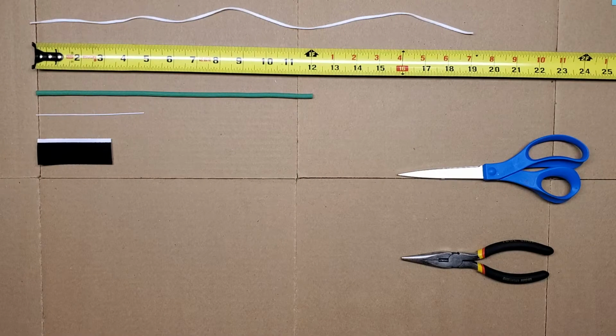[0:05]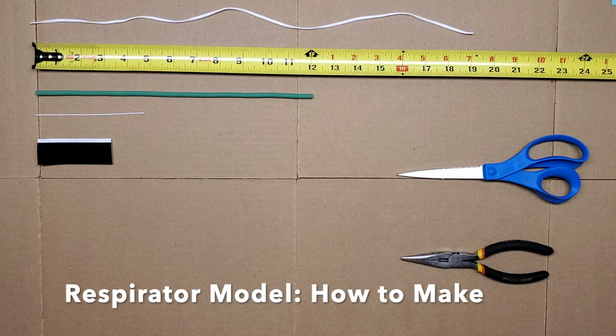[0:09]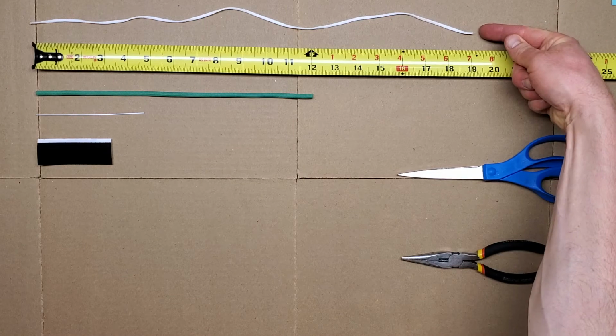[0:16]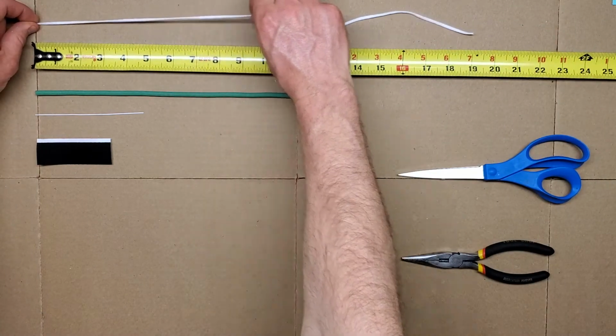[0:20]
This video will show you how to make and wear an ear loop fitter. It goes over a mask to reduce the gaps between the mask and your face. You will need approximately 19 inches of elastic. The elastic should stretch easily.
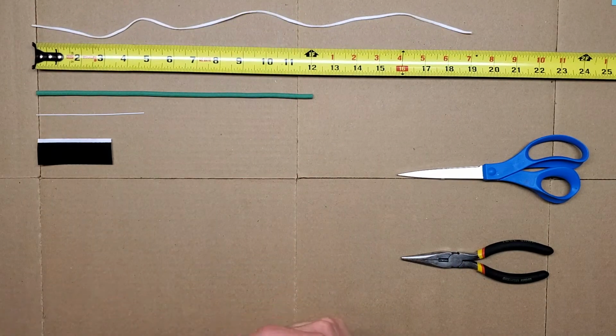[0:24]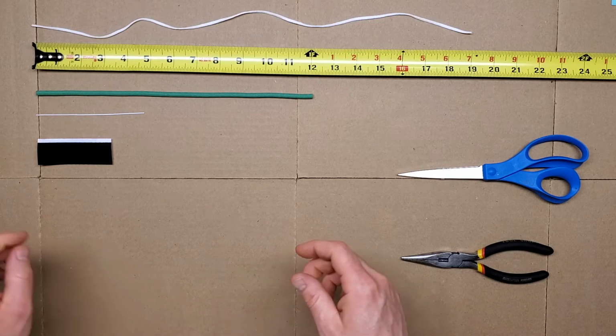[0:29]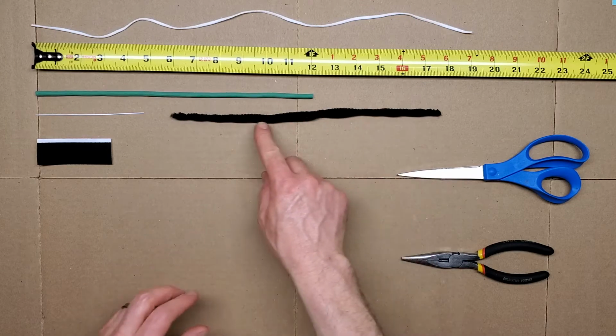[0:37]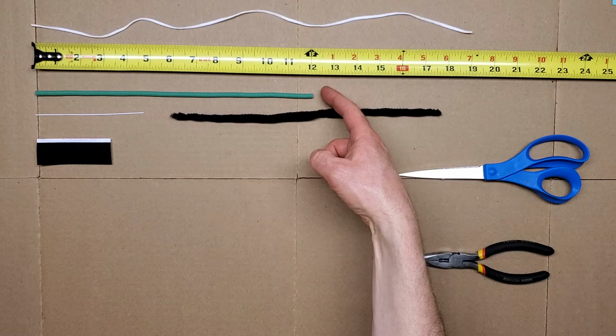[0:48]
If it doesn't, start with at least 24 inches of elastic. You will also need approximately 12 inches of garden tie. Or you can use pipe cleaner. Here I have twisted three pipe cleaners together. If you have a large face, neck, and or beard, use longer than 12 inches. A 14 inch length typically works well for these cases.
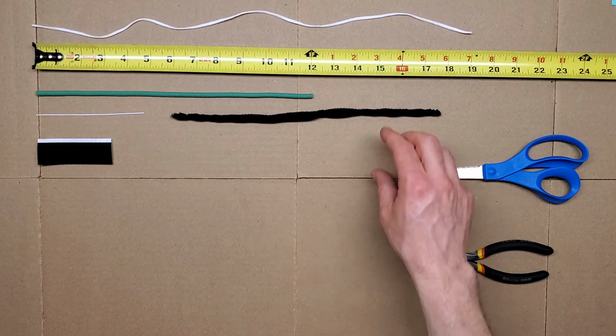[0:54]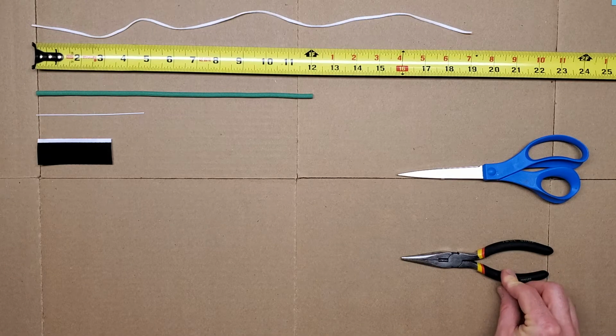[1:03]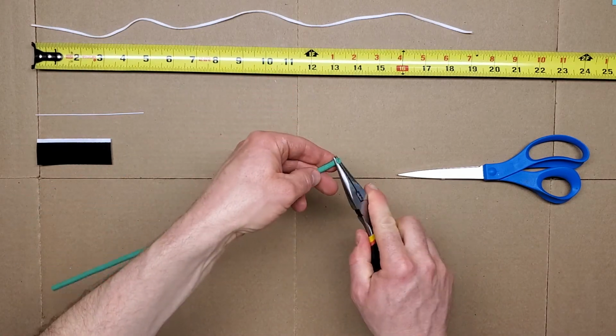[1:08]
I'll use the garden tie here, but the steps are the same for the twisted pipe cleaners. You will need a needle-nose pliers or similar. Form a loop at each end of the garden tie.
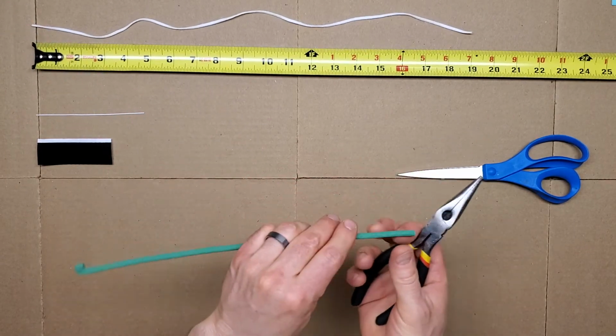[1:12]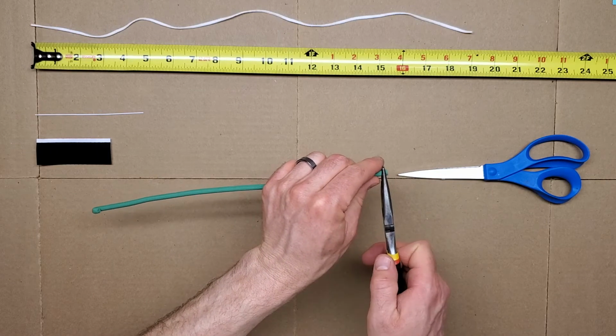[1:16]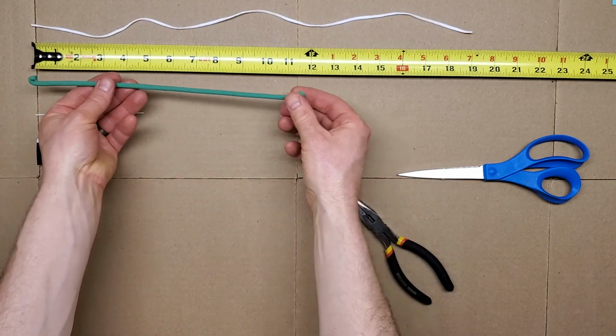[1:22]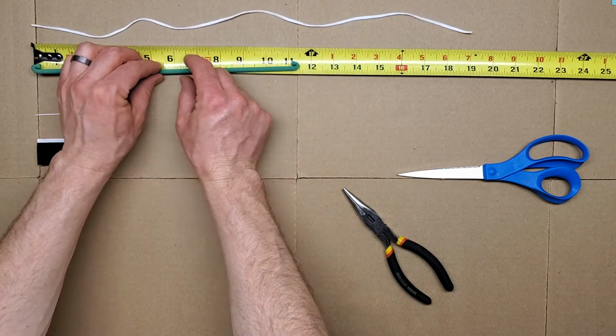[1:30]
Find the middle of the fitter and bend it at the middle. So here I've got 11 and a half, so 5 3/4 is the middle. So I'm going to bend it
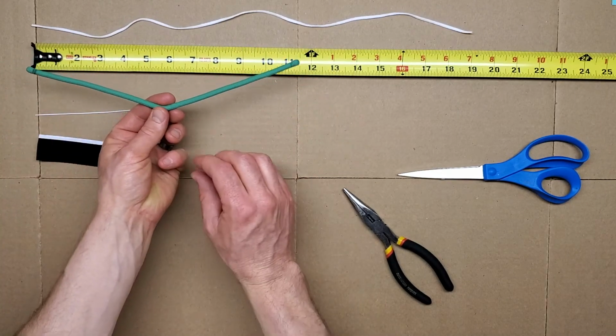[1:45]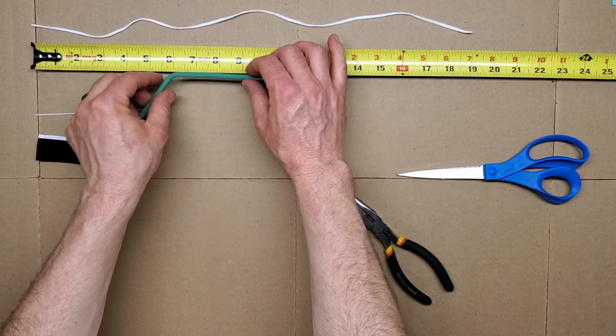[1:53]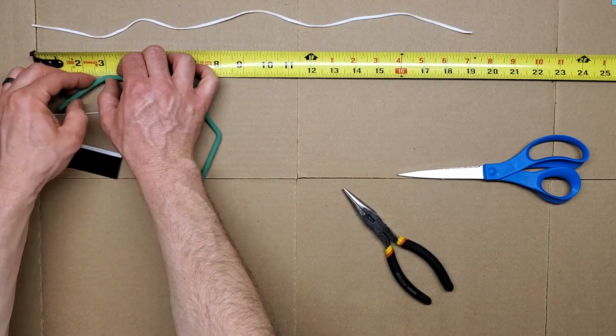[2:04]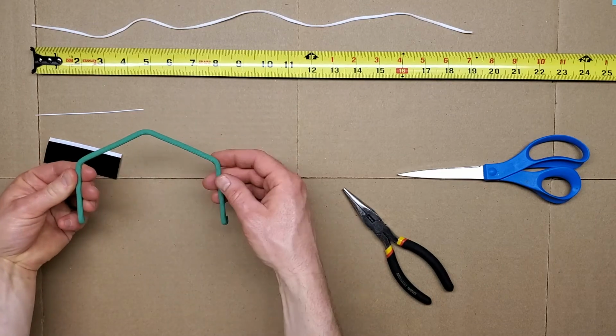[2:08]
Downward, actually. So those loops go down. So I make a bend like that in the middle, so the loops come up toward the camera. The bend is like this. Okay, so that's the bend. Now, 3 inches on either side, make another bend like that, and then 3 inches, make another bend like that. Good.
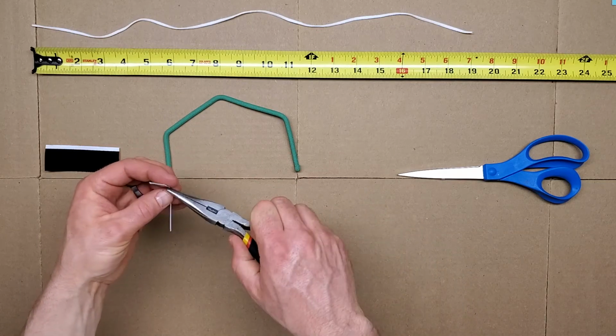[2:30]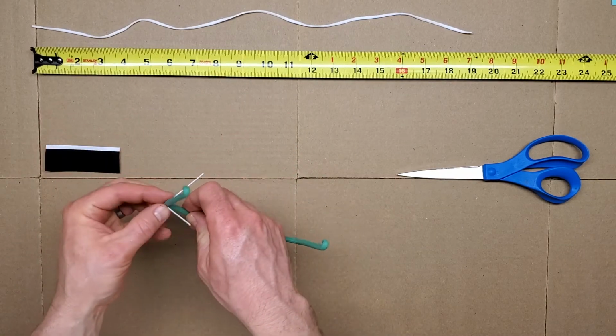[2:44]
Add a loop to one of the bends. An easy way to do that is with a twist tie. Use a smooth plastic coated twist tie if you have one. So first I make a loop around my needle nose pliers and then twist that so I get this shape. And then I twist it onto the bend like that.
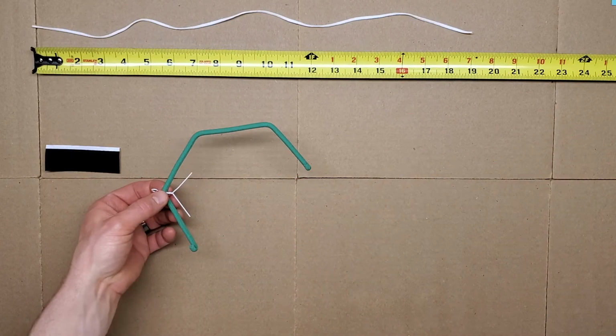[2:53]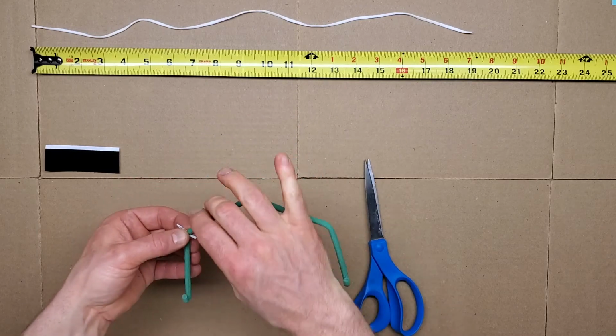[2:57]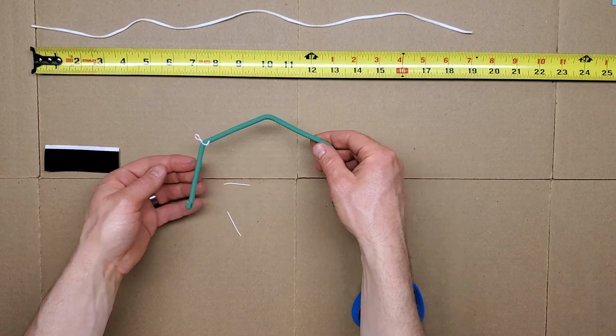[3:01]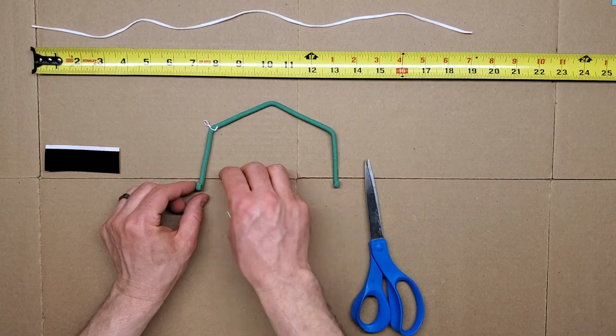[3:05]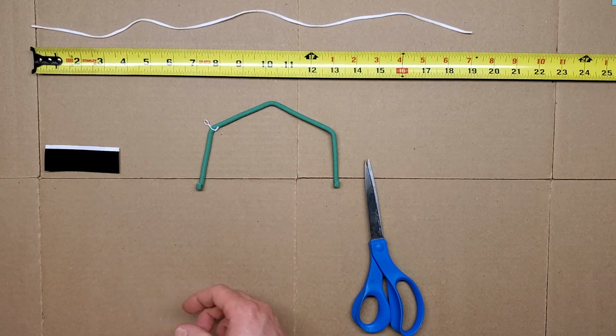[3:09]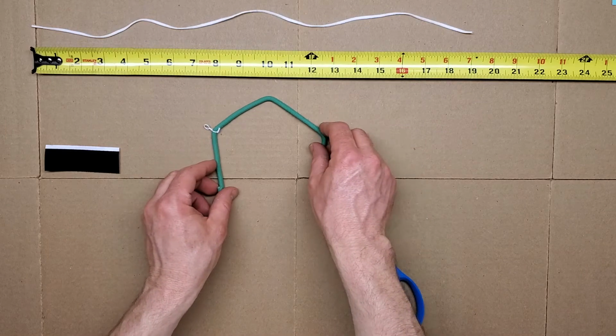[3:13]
And then I use the scissors to cut that, and then I bend this up. So it's this part where the loop comes up that will be the front, and I want that on the front so it doesn't poke the person wearing it. All right, so we've got a loop.
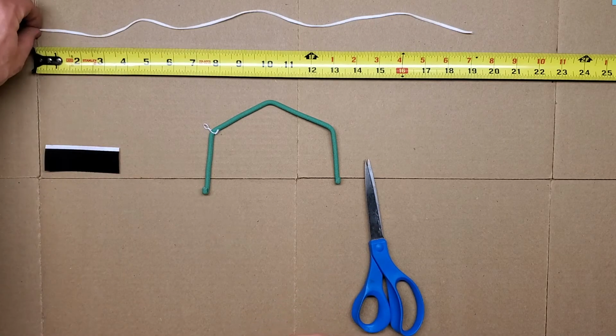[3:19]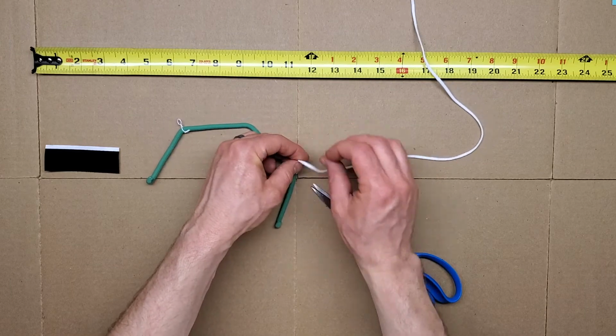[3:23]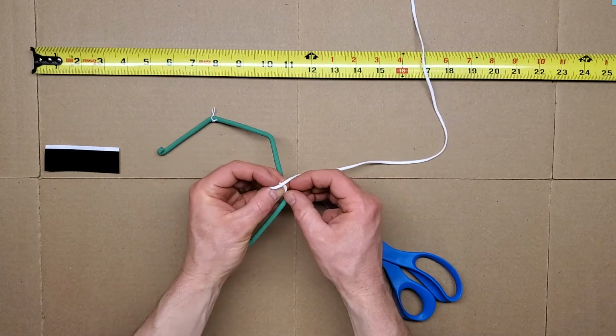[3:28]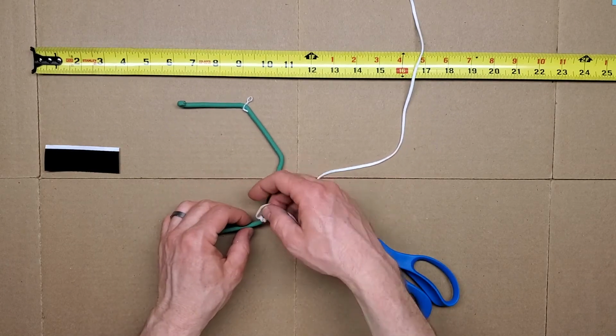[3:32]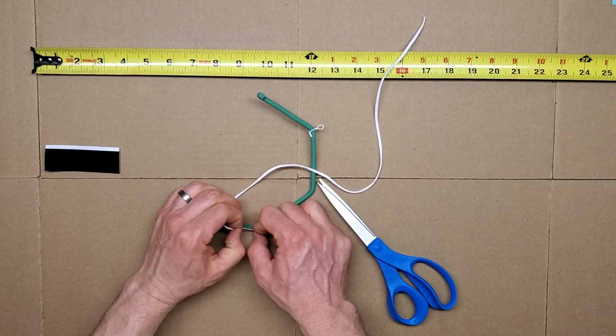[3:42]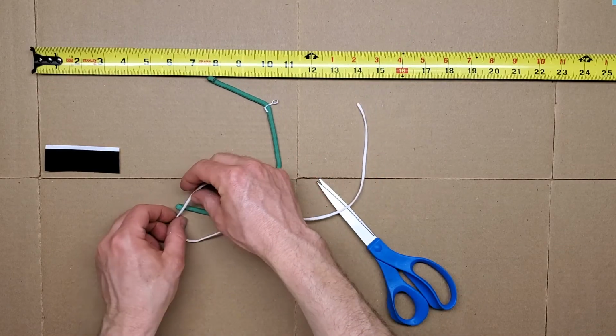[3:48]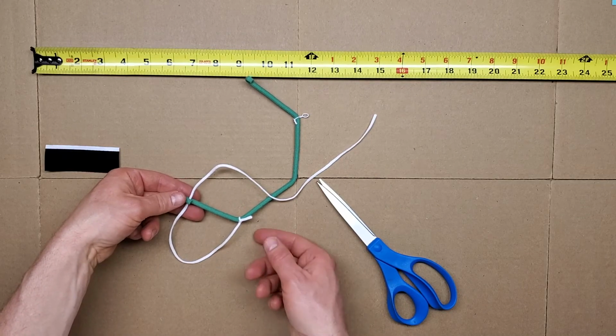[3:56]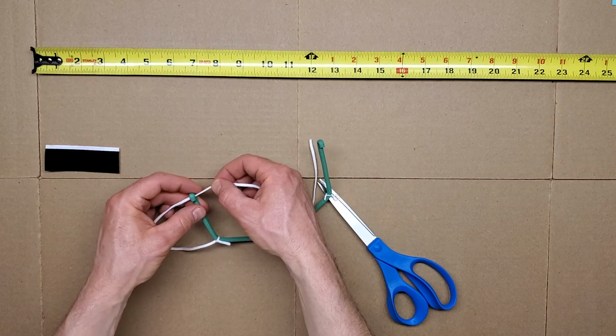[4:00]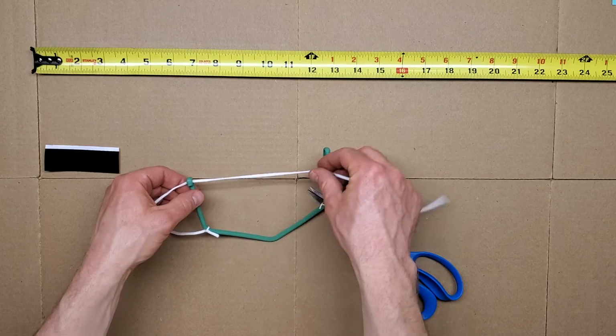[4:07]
Now we're going to take our elastic and tie it to the opposite bend over here. So just a simple knot there. And that you get pretty tight. You never want that to come off. So that one's tight. Okay, then we're going to feed the elastic around to make an ear loop and feed it into the end loop on the garden tie, squeeze that shut, and it should pull through there if you pull hard, but otherwise stay in place.
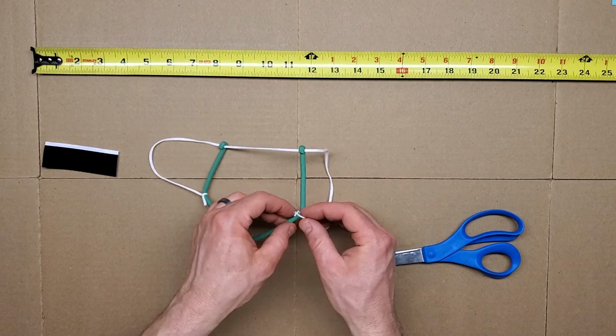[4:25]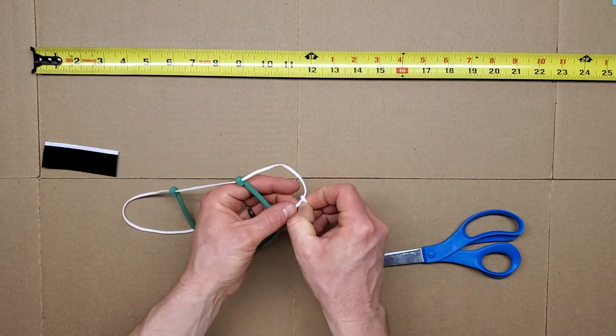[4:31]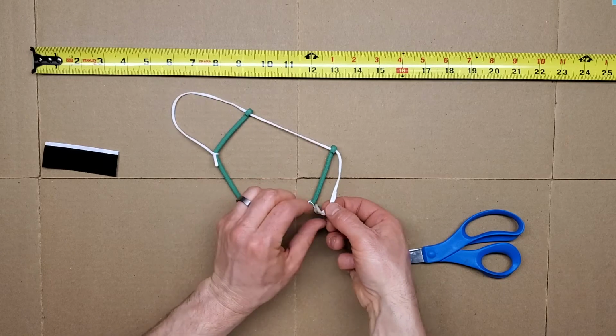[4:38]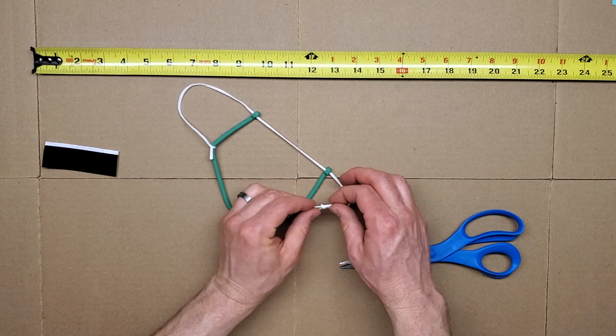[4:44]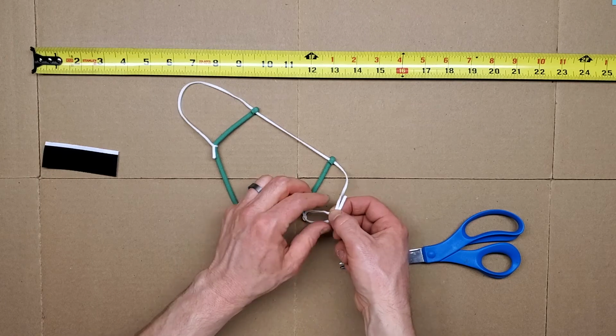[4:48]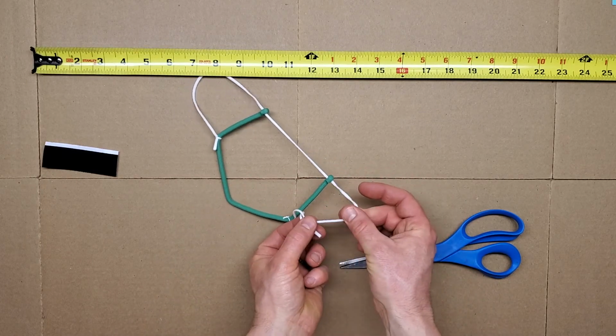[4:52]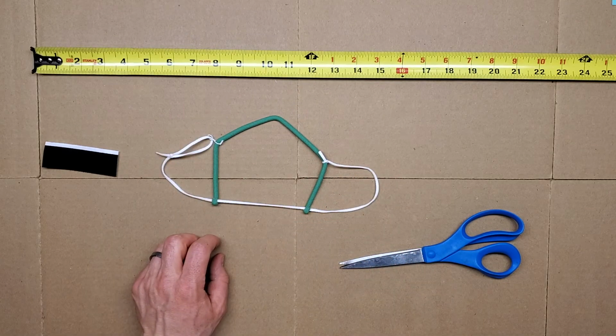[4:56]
So that's good. Then same on the other one. I'm going to feed it into that loop. Squeeze that so it pulls, but you have to pull kind of hard. And then finally, through the twist tie loop and then tie it to itself like this with another real simple knot. And you don't want this extremely tight. You want to be able to slide the knot along the elastic with some effort. And that's going to be a way to adjust the fit overall.
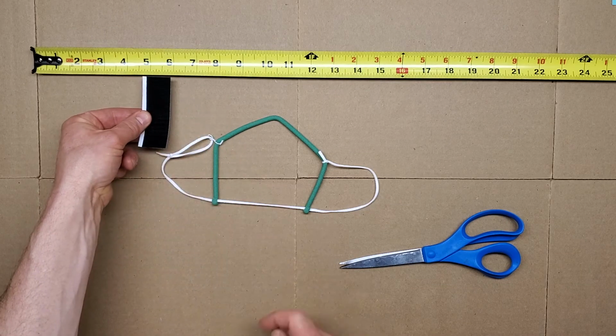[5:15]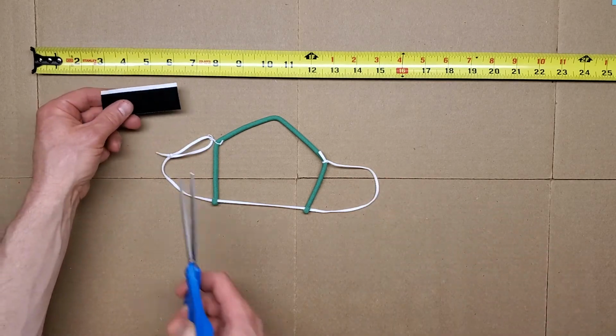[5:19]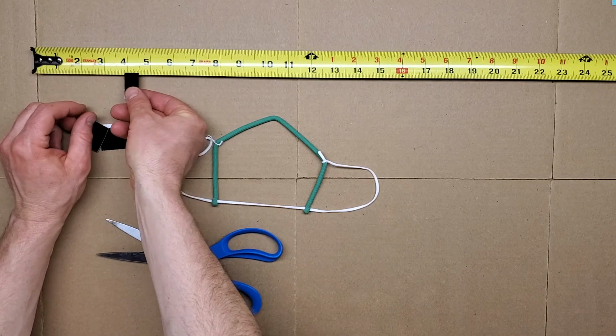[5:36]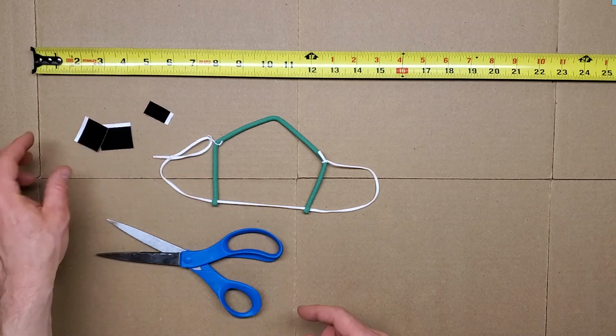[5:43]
Next, we will use hook and loop material, specifically the hook material, we don't use the loop material that this sticks to. So two pieces about 1 inch, so this is 1 inch wide, by 1¼ inch work well. So there's the first piece, 1 by 1¼. There's the next piece, 1 by 1¼. And then we'll end up with a piece about 1/2 inch by 1 inch. We're going to save this too.
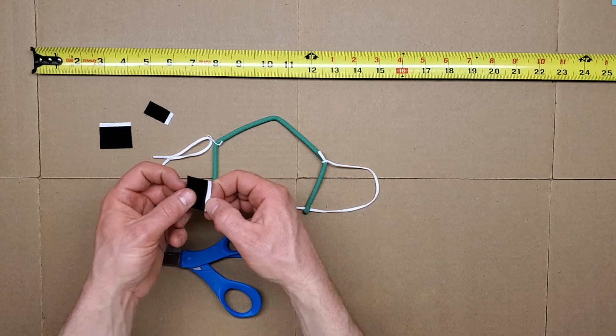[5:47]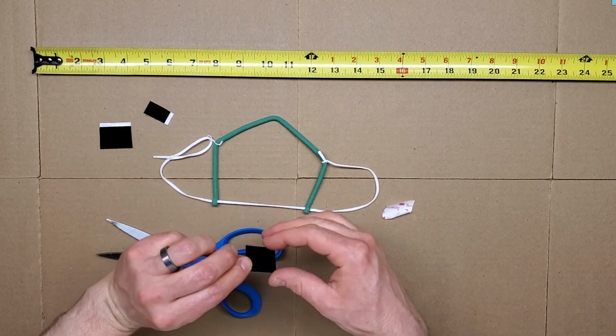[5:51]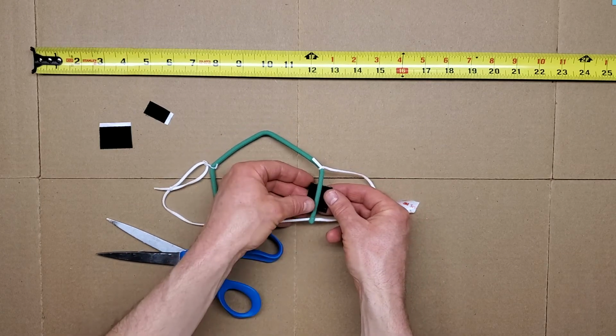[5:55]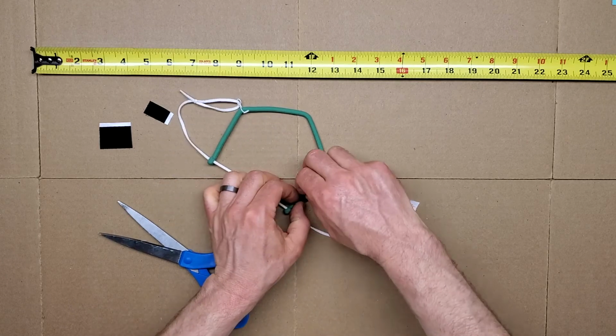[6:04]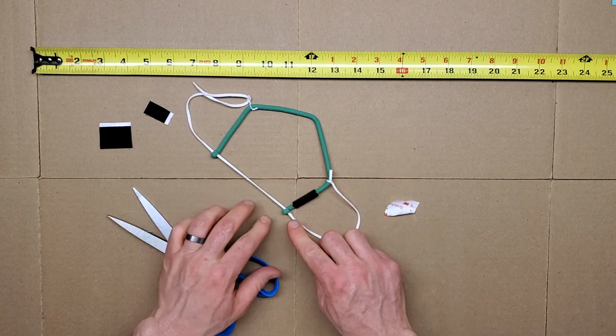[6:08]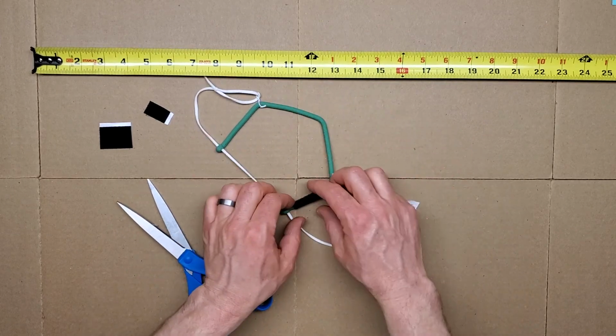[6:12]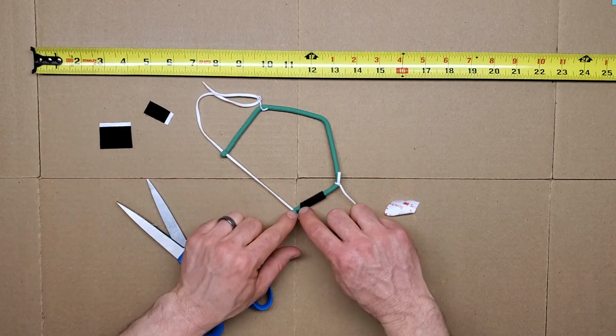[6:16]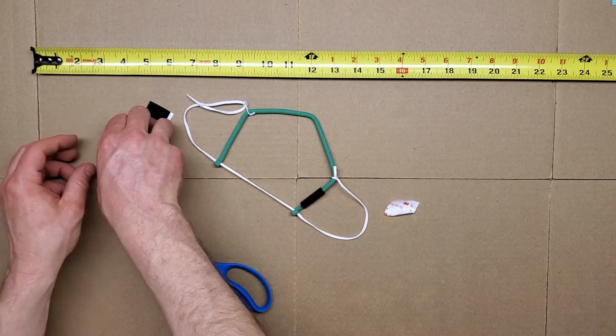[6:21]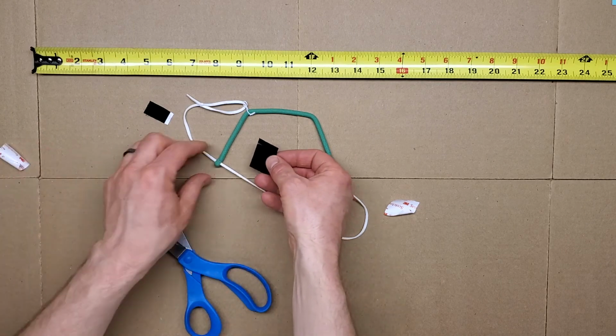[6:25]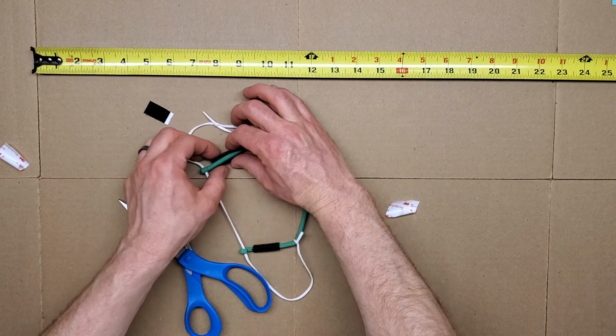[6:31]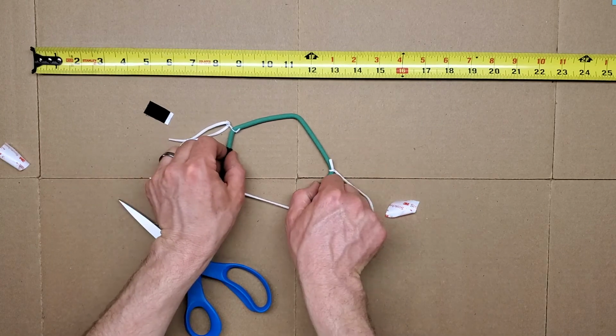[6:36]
Take off the adhesive. This is adhesive backed. And we want to wrap it around the fitter near the end loop and stick it to itself. So right here in the front, this is the front of the fitter where the loops come out, and this thing is in front, and now the Velcro, where the Velcro is stuck to itself, comes out front. And same here, hook and loop material. Wrap it around. Stick it to itself like this. Great.
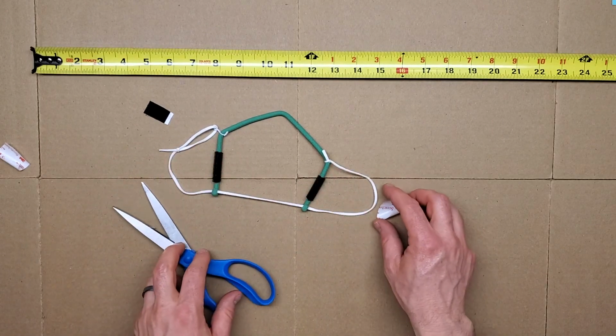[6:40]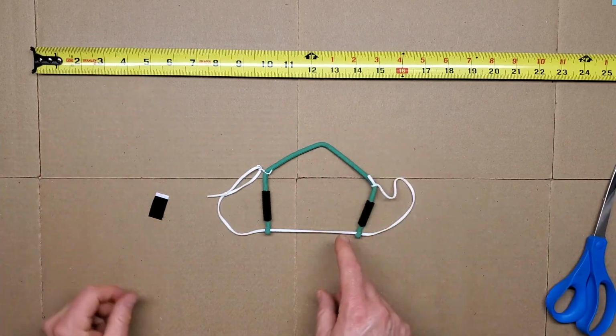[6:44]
Now we're going to take these two items, the fitter and the Velcro tab, to a mirror to try on.